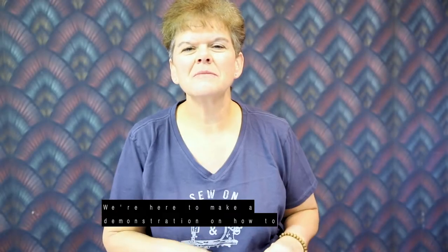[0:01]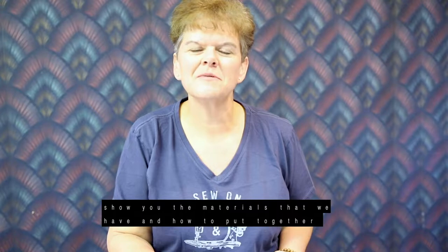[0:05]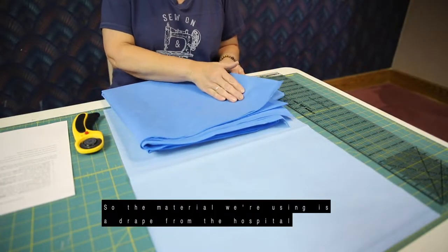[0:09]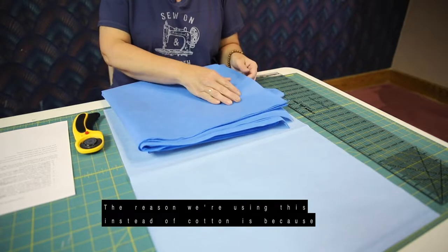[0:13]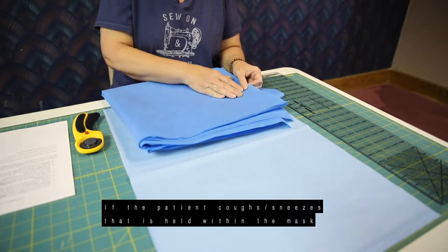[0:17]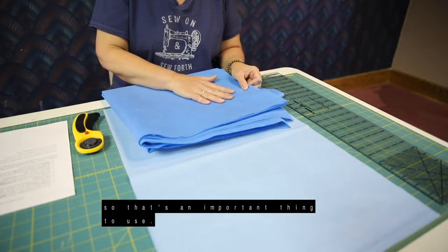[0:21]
We're here to make a demonstration on how to make a surgical mask, and we're going to walk through and show you the materials that we have and how to put together a mask. So the material that we're using is actually a drape from the hospital, and it is a 2-ply. The reason we're using this instead of cotton is because it is a moisture barrier. And so if the patient coughs or sneezes, that is held within the mask. And so that's an important thing to use.
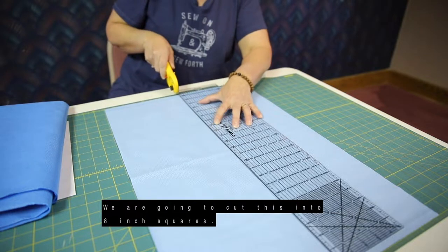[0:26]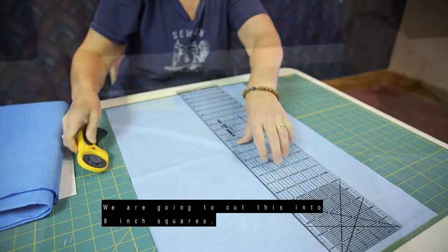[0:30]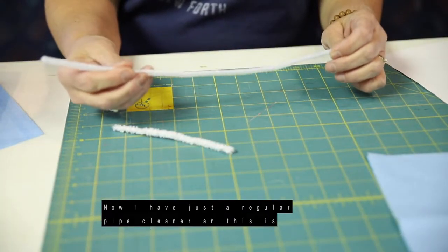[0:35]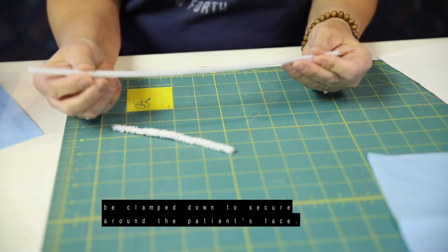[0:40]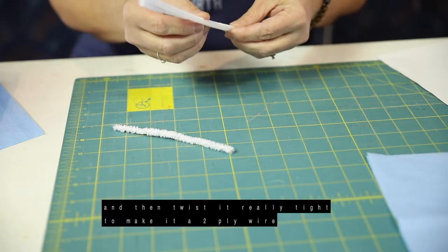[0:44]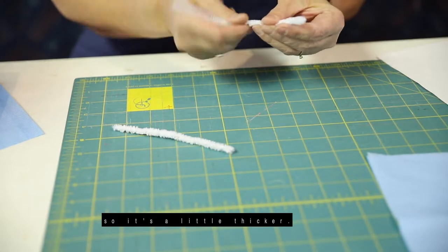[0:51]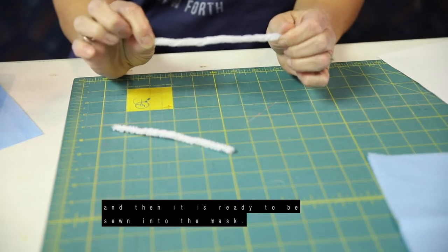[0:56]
So we're going to go on to cutting the material, and we are going to cut this into 8-inch squares. So now I have a regular pipe cleaner, and this is going to go in the bridge of the nose so that it can be clamped down to secure around the patient's face. So you're just going to take an ordinary pipe cleaner and fold it in half, and then just twist this really tight. So it kind of makes it a 2-ply wire, so it's a little thicker. And then that is ready to be sewn into the mask.
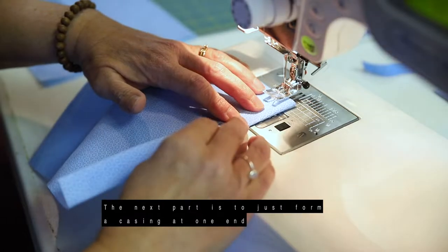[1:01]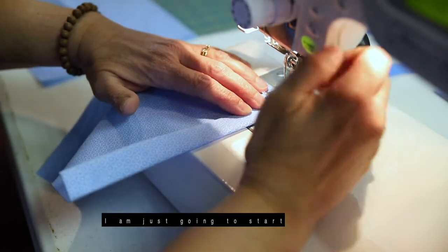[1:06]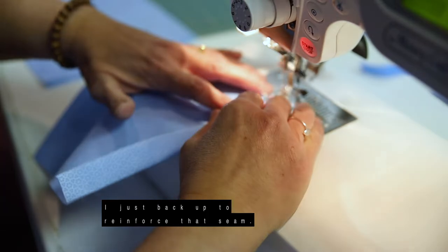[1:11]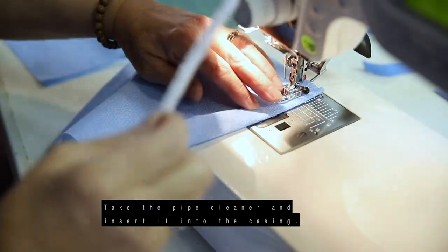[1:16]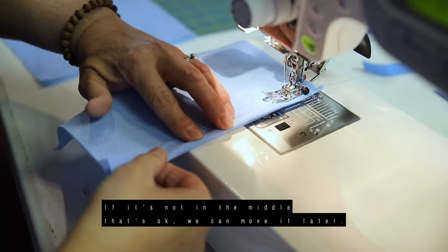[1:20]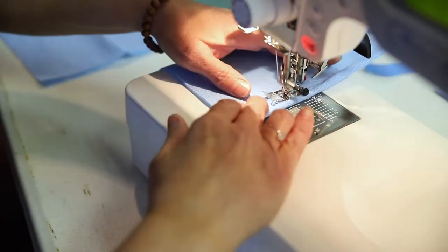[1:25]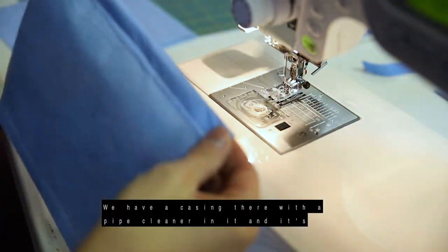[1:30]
So the next part is just to form a casing at one end to put our pipe cleaner in. So I'm just gonna start, and I just back up to reinforce that seam. We are sewing in paper here. And then I take my pipe cleaner and insert it into that casing. And if it's not in the middle, that's okay, we can move it later. And so we have a casing there with the pipe cleaner in it, and it's pretty close to the middle,
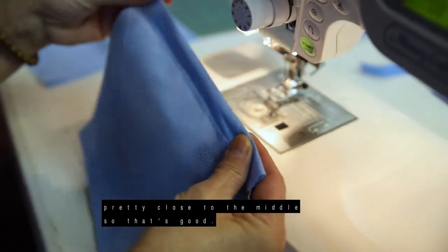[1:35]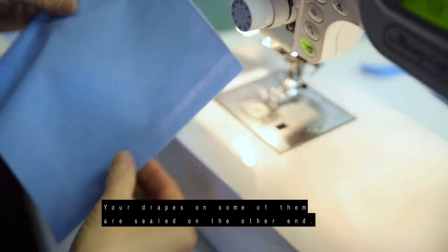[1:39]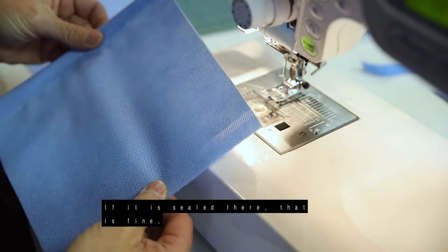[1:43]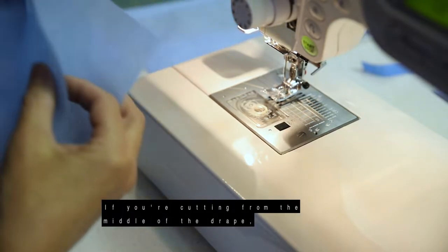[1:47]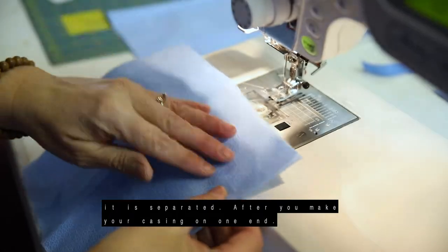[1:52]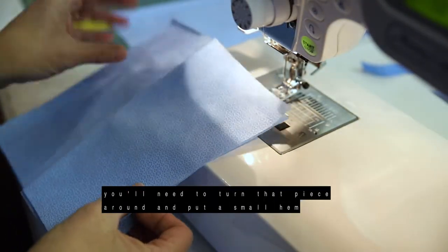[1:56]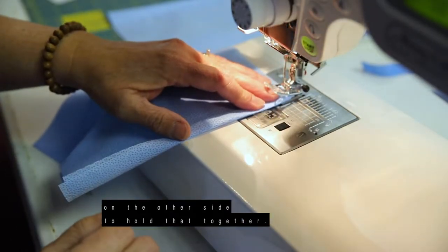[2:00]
so that's good. So your drapes, on some of them are sealed on one end, on the other end, and if it is sealed there, that is fine. And so we'll go on to the next step with that one. If you're cutting from the middle of the drape, it is separated. And so after you make your casing on one end, you'll need to turn that piece around and put a small hem on the other side to hold that together.
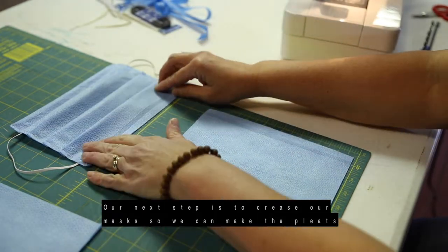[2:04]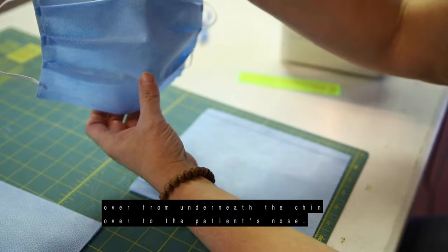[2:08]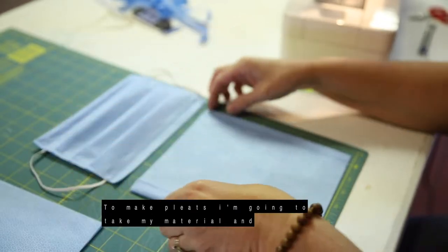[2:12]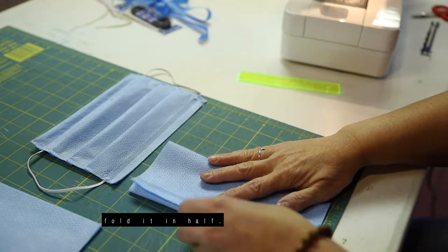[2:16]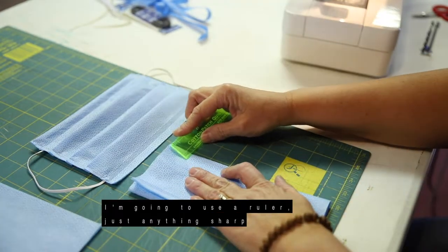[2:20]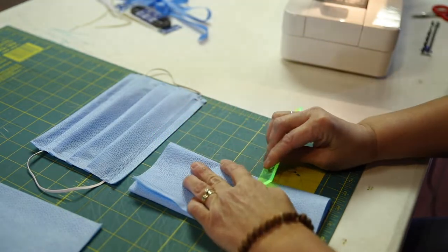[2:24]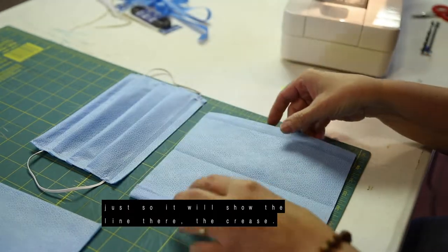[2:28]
So our next step is to crease our mask so we can make the pleats in here. And those are important, so it will stretch over from underneath the chin over to the patient's nose. So to make pleats, I'm gonna take my material and fold it in half. And you can crease this however you want. I'm gonna use a ruler, just anything sharp, so it'll show the line there, the crease.
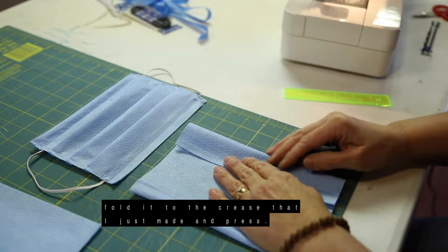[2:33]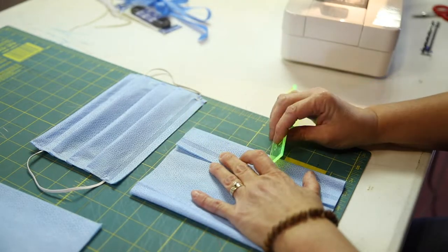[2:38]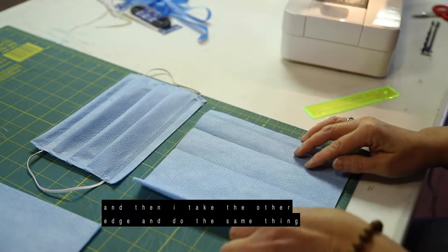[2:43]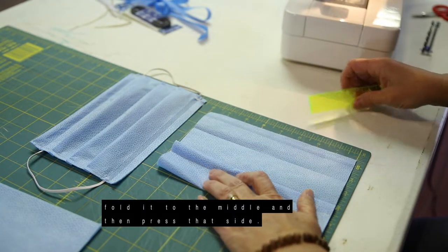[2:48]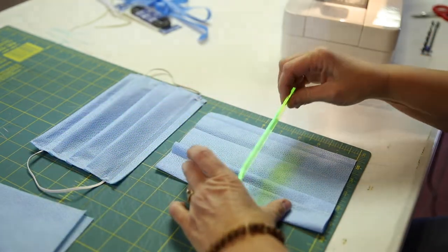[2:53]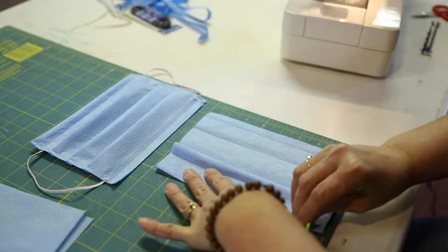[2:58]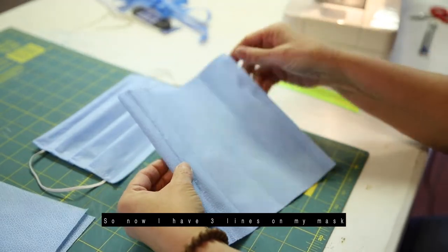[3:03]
After I've done that step, I take the edge and I fold it to the crease I just made and press. And then I take the other edge and do the same thing, fold it to the middle. And then press that side. So now I have 3 lines on my mask, and that's where we're going to make our pleats.
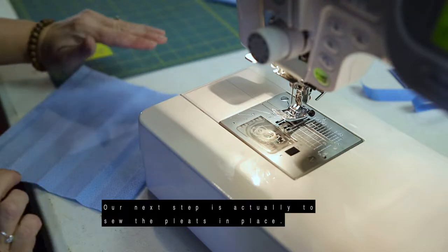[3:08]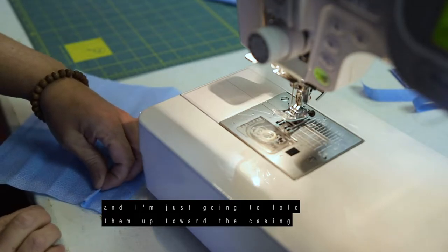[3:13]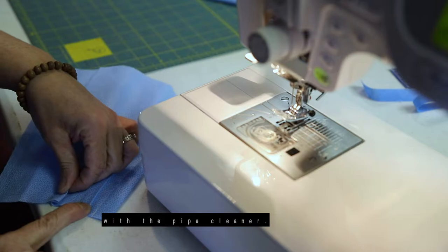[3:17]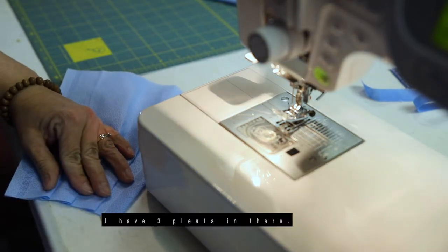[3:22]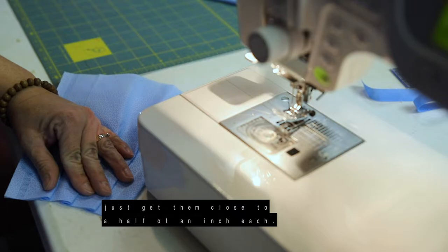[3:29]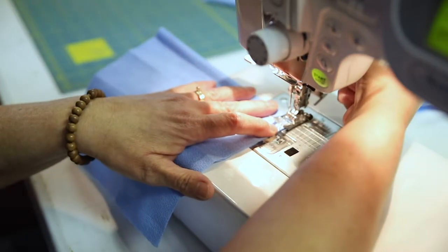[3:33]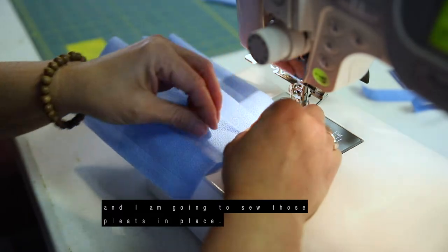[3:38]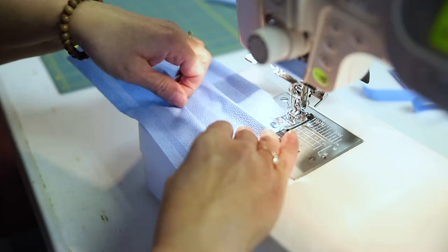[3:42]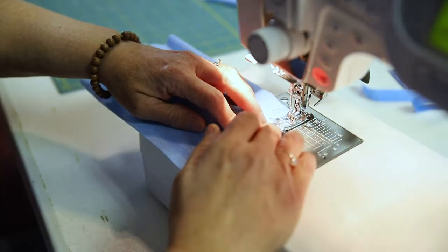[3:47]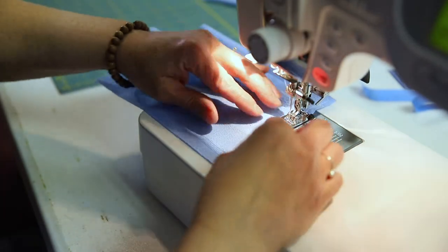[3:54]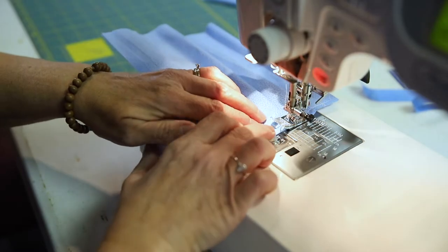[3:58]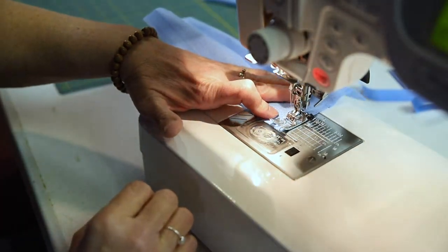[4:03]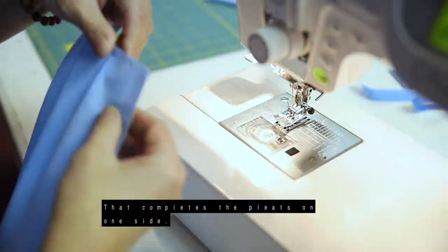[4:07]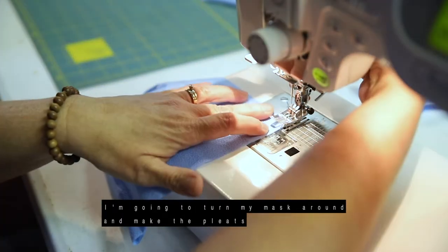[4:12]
So our next step is actually to sew the pleats in place. So I'm going to use my lines where I folded, and I'm just going to fold them up toward the casing with the pipe cleaner. And so I have 3 pleats in there. And you can measure these to make them exact, or just get them close to 1/2 inch each. So now I'm gonna take that up to my machine. And I am going to sew those pleats in place. So that completes the pleats on one side, so I'm just going to turn my mask around and make the pleats on the other side.
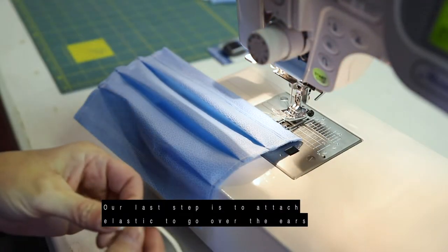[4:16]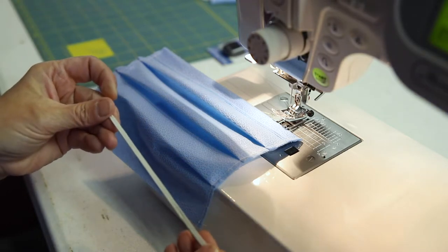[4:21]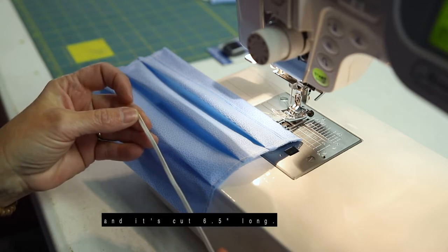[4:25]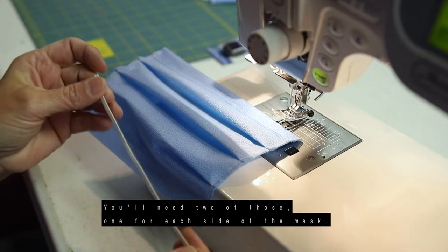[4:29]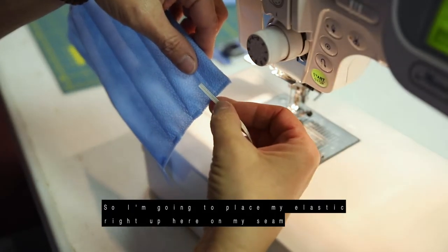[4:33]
Our last step is to attach the elastic to go over the ears to hold the mask on. And what I'm using right here is 1/8 inch elastic, and it's cut 6.5 inches long, and you'll need 2 of those, 1 for each side of the mask. So I'm just going to place my elastic right up here on the seam where my casing is at the top.
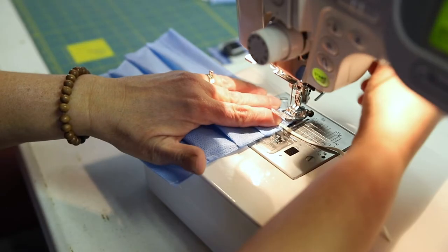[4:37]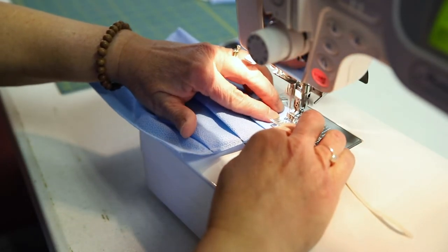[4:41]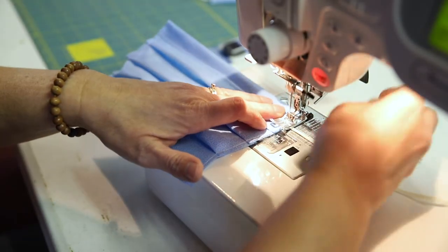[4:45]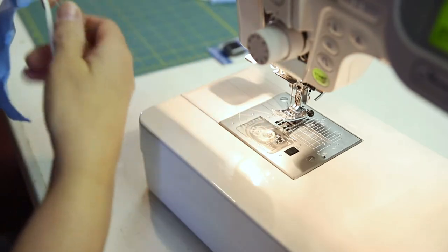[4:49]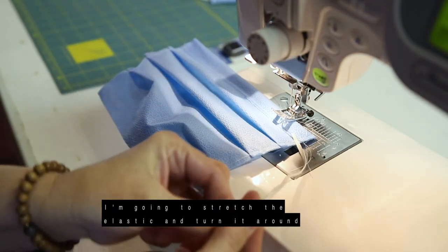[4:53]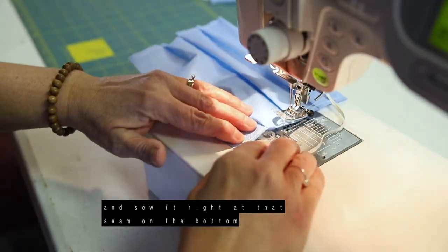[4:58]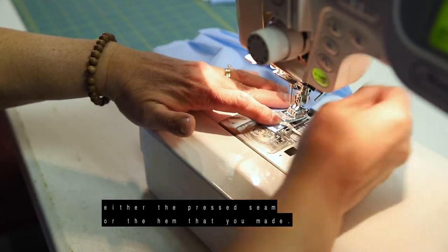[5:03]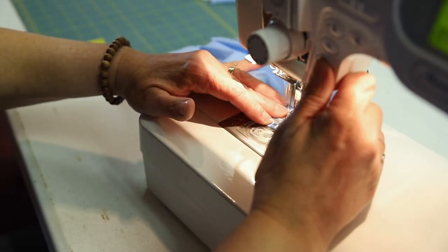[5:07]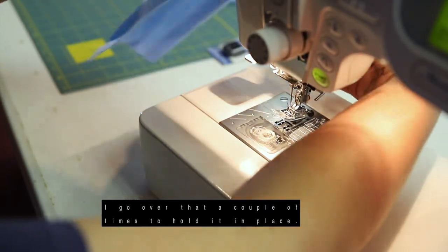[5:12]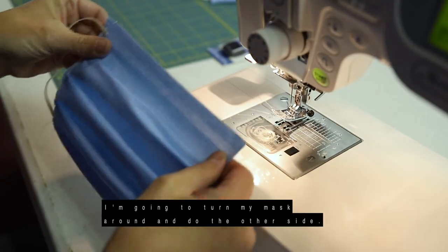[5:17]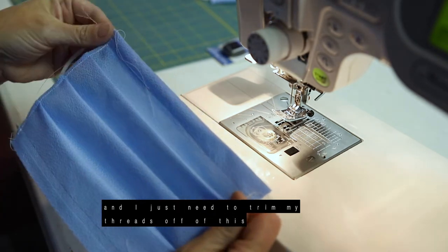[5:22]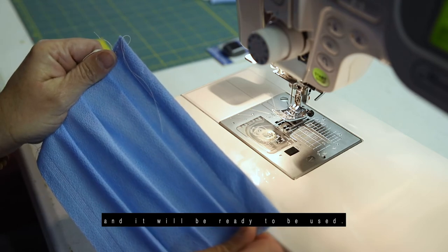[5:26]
Then I'm going to stretch the elastic and turn it around and sew it right at that seam on the bottom, either the pressed seam or the hem that you made. And I go over that a couple of times to hold it in place. So there is the earpiece for one side. I'm going to turn my mask around and do the other side. So now I have a completed surgical mask, and I just need to trim my threads off of this, and it'll be ready to be used.